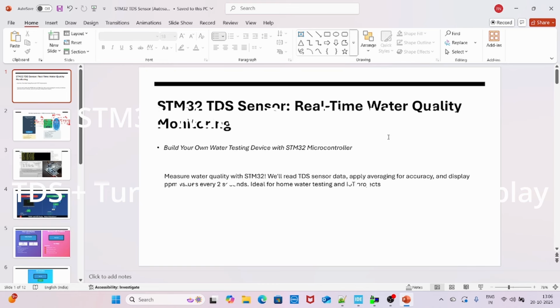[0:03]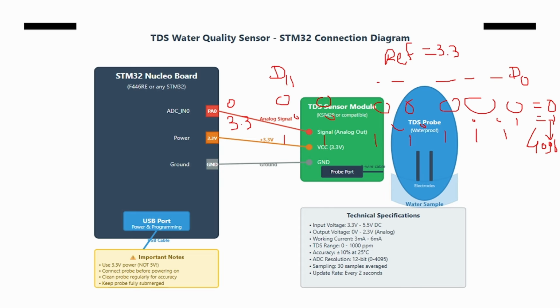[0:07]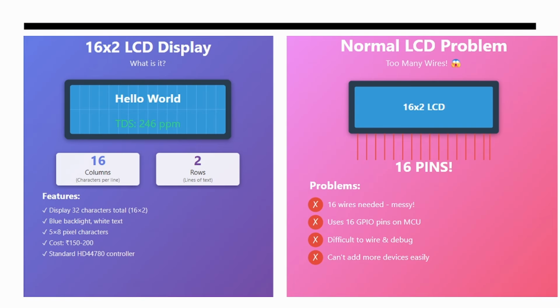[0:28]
In the last video we built a TDS water quality monitor and we also used an LCD, right? And now today we are adding a turbidity sensor to measure the suspended particles. In this video I'm going to show you how we can add another sensor on another ADC pin. Our setup will remain the same, but this time we will measure another parameter to measure the cleanness or the quality of the water, which is the cloudiness, right?
So this part we have already covered, and this is what the turbidity sensor looks like. On the left side you can see the sensor, and on the right side it's our setup. In the last video we added up to this TDS sensor, but in today's video I'm also going to explain how to interface this sensor with the circuit and how to measure the water's cloudiness, or you can say measure the suspended particles, dirt, in water. It's like how cloudy the water is, right?
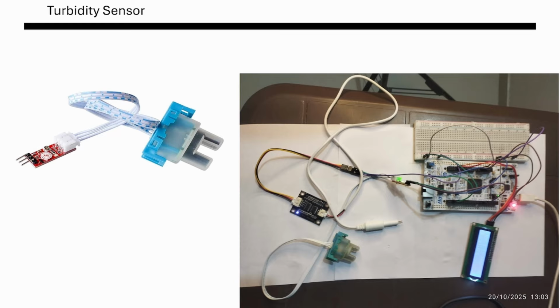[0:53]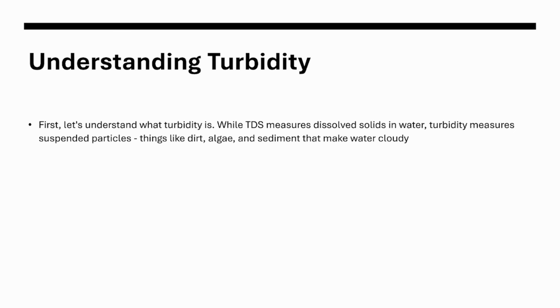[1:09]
For clean water, it shows high ADC, or in another way you can say low NTU. NTU is a measurement of the quality of the water, right? And for dirty water, it will be high. So the relationship is inverse. Before understanding this, let's first understand what turbidity means.
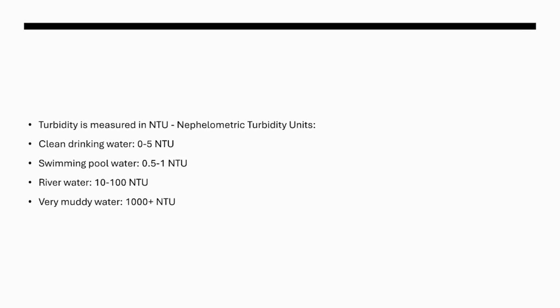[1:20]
While TDS measures dissolved solids in water, turbidity measures suspended particles like dirt, algae, and sediment that make water cloudy. Turbidity is measured in NTU, which stands for nephelometric turbidity unit. For clean water, the value should be between 0 to 5 or very, very small. For swimming pool water, it should be 0.5 to 1. For river water, it should be 10 to 100. And for very muddy water, it would be 1000 plus. Right? So these are the standard values.
However, today we are just trying to implement the thing. So these criteria may not be met, but we will try our best to achieve an experimental result, which we can demonstrate and which we can understand. This is our main goal.
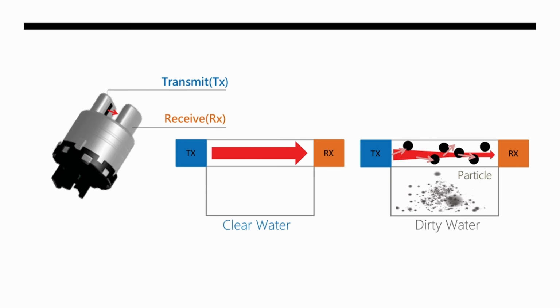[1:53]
The principle of the sensor is that it has two different parts, not inputs, but you can say probes. One is a transmitter and the other a receiver. The transmitter transmits the signal and the receiver receives the signal. Here on the left side you can see, if the water is clean, then whatever the transmitter transmits, the same signal is received by the receiver, with zero loss, or nearly zero loss. So in this case you will have a high output, right? The receiver will receive maximum of whatever the transmitter transmits.
But in case of dirt or particles, this scenario will change. As the water is dirtier, as the number of particles increases, the signal will be distorted and the receiver will receive very, very little signal. And hence the ADC or the output voltage will be very low. So it's an inverse type of relationship. For clean water, output voltage will be high. For dirty water, output voltage will be low.
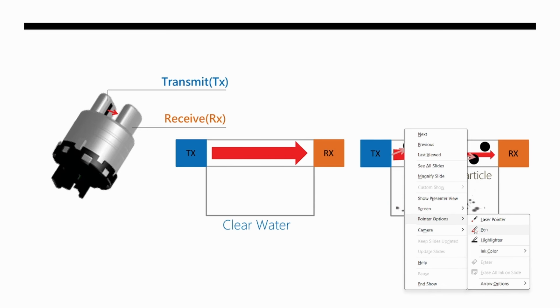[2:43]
Okay, so let us understand this as a graph. Let us assume this is ADC, and we have a 12-bit ADC. If you don't know, then please watch my previous video. As voltage increases, the ADC also increases, right? But from this concept, if ADC is high, the water is clean, and if ADC is low, the water is dirty. So you can say this is the cleanest water, and this is the dirtiest water. I can write it like that. This will be our overall picture, right? You can draw it like this. So ultimately you have to measure the ADC. If ADC is high, water will be more clean. If ADC is low, water will be bad, right? So this is the overall principle.
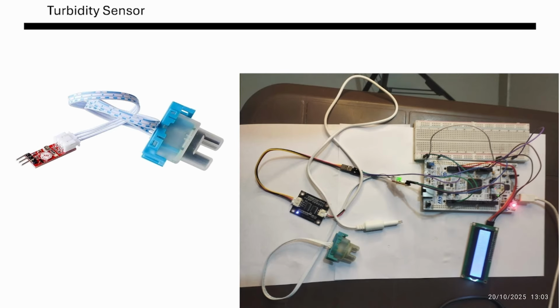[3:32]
And our sensor connection: the sensor is having 5 volts, so simply connect plus 5 and ground, and one output pin is connected with PA4. So here you can see in this diagram also, this wire is PA4, right? This one. So this is PA4, and the other things are ground and plus 5 volts.
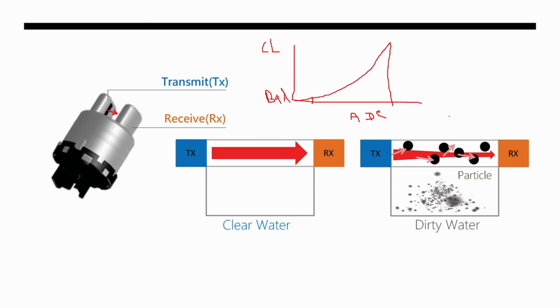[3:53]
Because we need two plus 5 volts, one for this LCD and one for the sensor, I've used a breadboard in this video, right? So this is the overall connections. And the main important thing is this conversion, right? So you have to remember this thing.
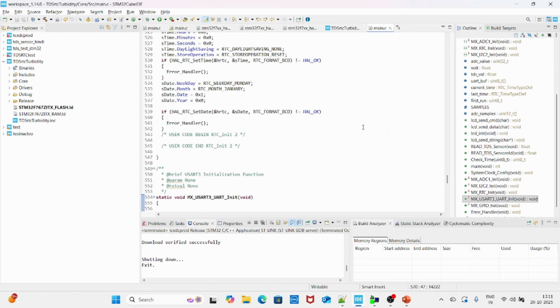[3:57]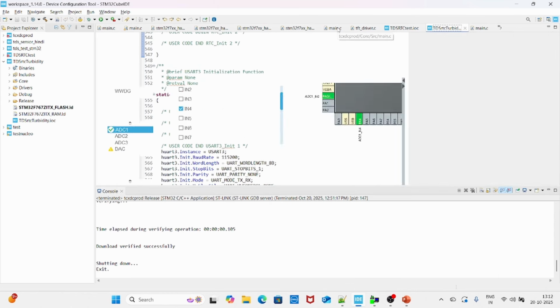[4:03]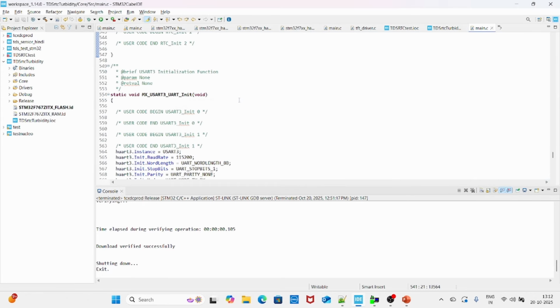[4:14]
Now let us open our code, right? So this is the same code which I explained to you in the last video. Now here I added only one thing. I just enabled one more pin of ADC 1, and this pin is around here, PA4, you can see, right? And then I just generated the code. So now in this code we have PA4 also available. So I have to simply program this PA4, and the other things will remain as they are.
So for that, again you can see we have all the functions which I already explained to you, right? ADC and how to read this TDS sensor, and other ADC parameters. Now I'm just adding one more function. It's a float read, and this time I'm going to read the turbidity sensor, right? So this function will read the turbidity value. It will convert the value into the required number, and then we will display that number on our LCD. So let us take one float parameter.
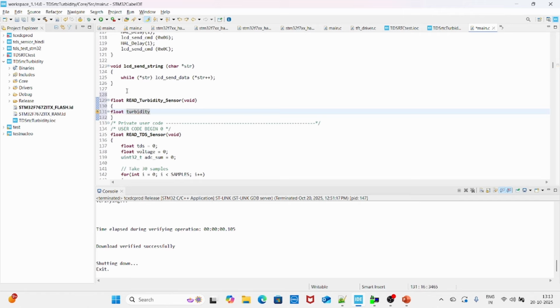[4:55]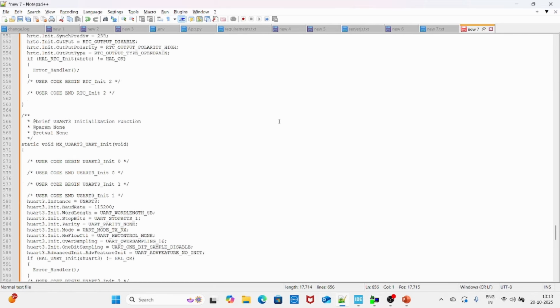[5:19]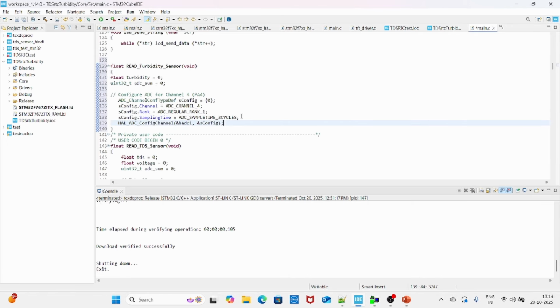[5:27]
Now let us configure the ADC, right? To configure the ADC, we have to write some configuration parameters, and because we are using channel number 4, I'm just using some configuration parameters which I have already pre-written over here. So I'm just taking them as they are. These are the configuration parameters, right? What we are telling the microcontroller is that I'm going to use channel number 4 at ADC. This is the sampling cycle and this is the configuration channel. So I'm telling that my ADC is ADC 1 and my channel is channel number 4. That's it. Now the rest of the thing is the same as we did in our TDS part.
So I'm just taking 30 samples. Sample is again a variable, so you can take any value. In our current example, it is 30, so it will take 30 samples continuously and then average them, and that is how we will get a stable value. Okay, and now let us start the ADC. This thing I already discussed. The function to start the ADC is HAL ADC Start, and here you have to write the handler of that ADC. So our ADC is hadc1. So this will start our ADC.
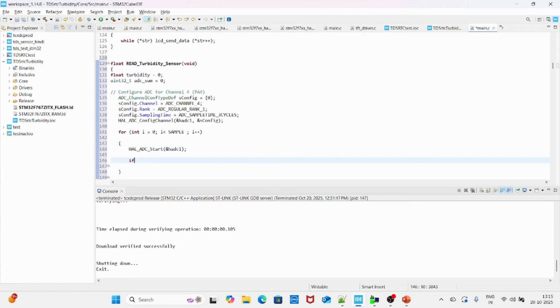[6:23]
Now we have to wait until it converts the final output. So for that we have poll for conversion, right? And here again we have two arguments. One is the handler and one is a timeout. And we have to wait until it becomes HAL OK. So HAL OK indicates now our conversion is done and now we can read the value. It will take very small time, but we have to wait for this. And now we have to store our value into some variable, and to get the value we have this function HAL ADC Get Value. Again here also we have to pass the handler.
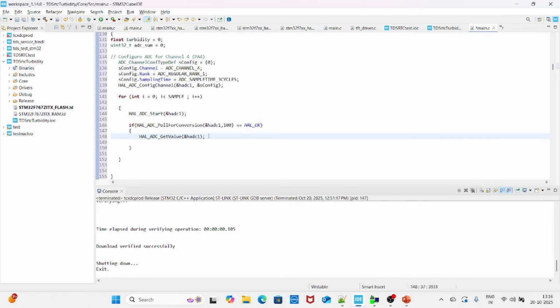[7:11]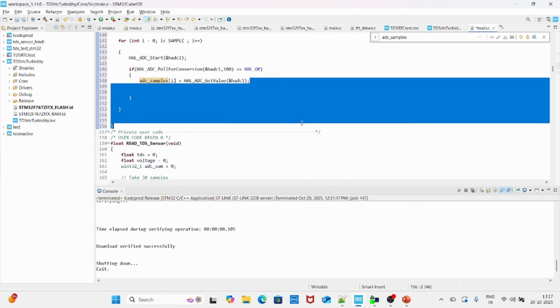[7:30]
But now we have to save this somewhere, right? So for that we have this variable ADC samples i, right? And this we have already declared over here, right? Number of samples. So this is the variable where we will store 30 different values, continuous 30 different values. And then let us find the sum. So it will continuously add these one by one, and finally you will have the total sum of all ADC values.
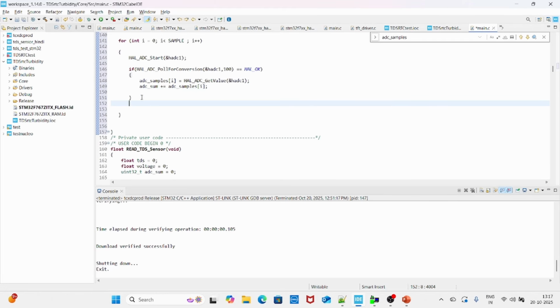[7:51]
Now once we have the total of 30, let us stop this. And to stop, again we have to write HAL ADC Stop, pass the handler, and wait for some time. Let us put 30. It's a small number, right?
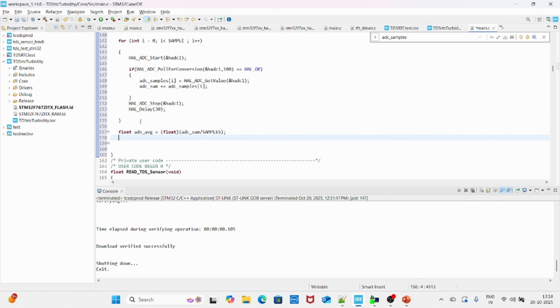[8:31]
So now we have the final sum of 30 values. Now we have to find the average. So ADC average will be float. Here I'm typecasting the final answer. We have this ADC sum divided by samples. Okay, so this is very simple. We are simply finding the average. So sum of all 30 divided by 30 will give us the average, right?
Now this is the main important part. This is the calibration part. As I told you earlier, for clean water, let us say ADC clean is some number, right? This could be any number. I'm just taking it 2800. This is the ADC reading for clean water. And as I told you earlier, for clean water, ADC will be high, right? But at the same time, our output NTU should be low, as low as possible. So ideally, let us take it as 0, right?
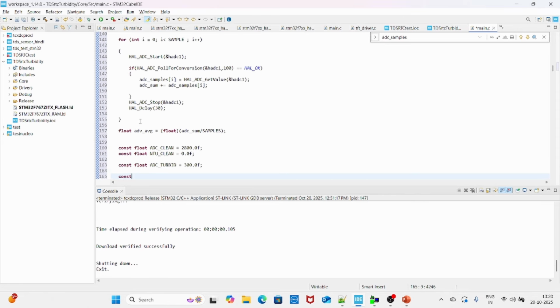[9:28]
And in the same way, let us add one more calibration point, but this time for the turbid water, right? 300. You can change this, you can calibrate this, right? But in this video, I'm just going to explain the concept. Later on, we will calibrate this and make a final product which can be used to measure the quality of water. But this time I will just explain the concept. Okay, so for turbid water the NTU would be high, so let us take this as 1000, right? So here I have two different calibration points.
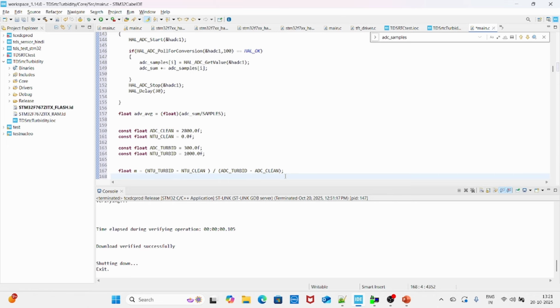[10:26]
Okay, and now we will write the equation for the slope, like NTU is equal to mx plus b. X will be your ADC value, right? And we'll calculate the slope. Float m is equal to, now let us use this formula: turbid water NTU minus clean water NTU, divided by turbid ADC minus, sorry, clean ADC. Okay, so we are calculating the slope.
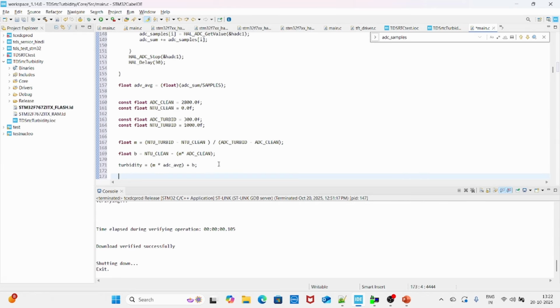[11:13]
Now we will calculate the intercept. B will be, sorry, we put b as NTU clean minus slope into ADC clean. So this is our intercept. And now we will apply this in the equation. So NTU will be m into ADC plus b, right? So our final turbidity would be slope into ADC average plus b. I will explain this calculation in more detail in another video, because this video will become more and more longer. So that's why I just stick with the concept. We are not going much into mathematical calculations, but this is what the turbidity calculation is.
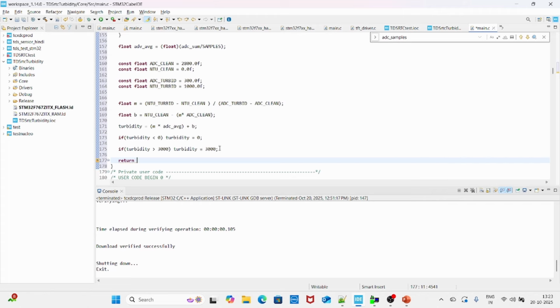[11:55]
And now let us limit this, because we have to make sure the value will not cross a certain limit. So if turbidity is less than 0, we will keep turbidity equal to 0. And in the same way, if turbidity is greater than 3000, let us keep it 3000, not more than this. Because if your calibration goes wrong, you will get an infinite value, right? Which is not perfect. So just keep this in mind. Whatever calibration value you define, ultimately you have to limit this, okay? Because in an ideal instrument, it should be within the range. It is not like an infinite thing, right?
So now this is the calibration. It uses y is equal to mx plus b. We measure ADC at two known NTU values. Okay, because we know these two known values, we calculate the slope and intercept and then apply the formula. Okay, main part. Now again, we have to call this function in our main program.
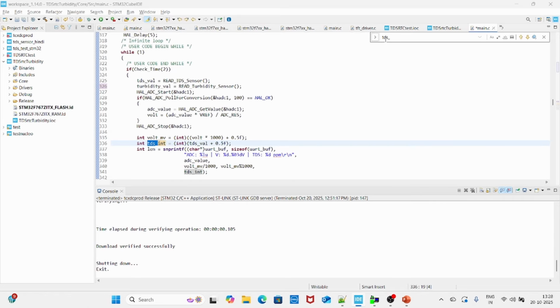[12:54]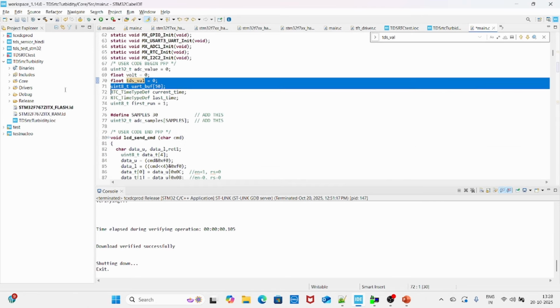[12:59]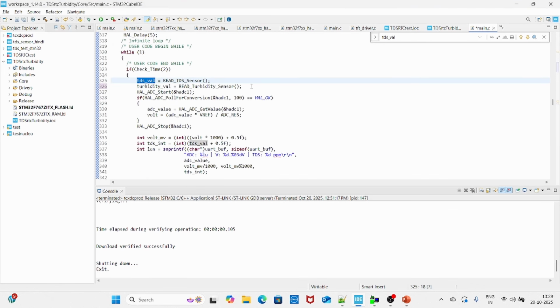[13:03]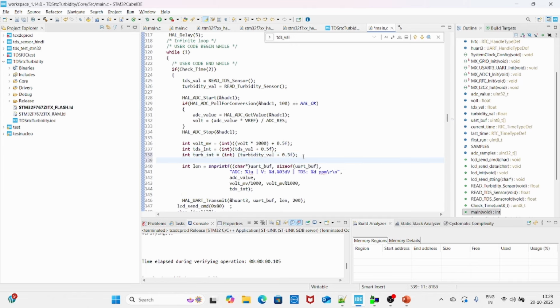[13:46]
So I'm just taking another integer. We typecast this final calculation into integer. Let us write this turbidity value plus F. Okay, so this is also added.
Now change UART output to include this turbidity. So here we have this UART buffer, right? And here I'm just removing this totally and keeping this TDS as it is. Percentage D ppm, turbidity, percentage D NTU. This is the unit. And I'm just passing only two things: one is TDS and one is turbidity, right?
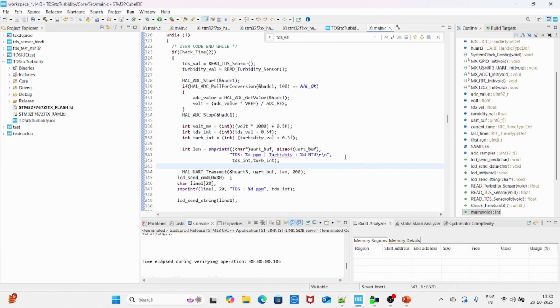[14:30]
So this is the UART part. Now update the LCD as well. In the LCD we have the first line where we have displayed this TDS. We will keep this TDS on the first line only. Now we will display the turbidity at the end of the second line. For that we have C9. As I told you earlier, C0 means second line, C9 means second line, ninth column. So this turbidity part will start from column number 9.
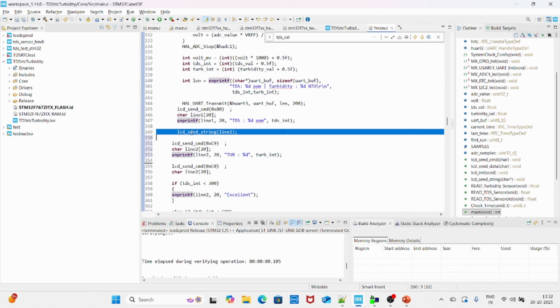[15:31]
Let us take character and just use this function as it is. Line 2, this time we are using line 2, and instead of TDS, it should be TUR, right? Remove this ppm. We are not going to write anything because we have limited space, and this variable should be int, right? And we will simply add this on the LCD. So we will simply write LCD send string line 2. So on first line we have TDS, then on second line, column number 9 will be turbidity is equal to the value, right?
And now let us add water assessment. So on C0, on the second line in first column, now simply put condition. If our TDS int is greater than 900, and if our turbidity value is greater than or equal to 300, we have to simply write bad. Let us use this formula as it is. We are not going to copy anything on any value. So water is bad.
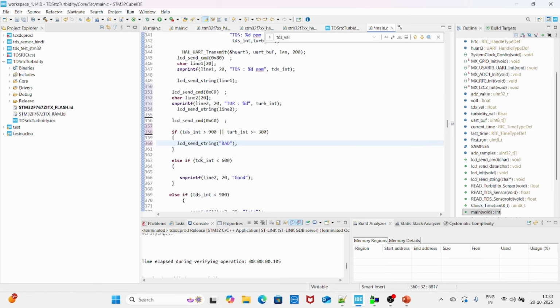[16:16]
Now else if TDS value is greater or equal 600, and if the turbidity value is around 150, sorry, yes, we have to change this part, right? Around 150, let us write fair. Copy this again. If this value is greater than 300, and if this is greater than 50, we can say let us write good. Else, if the TDS value is less than 300 and turbidity value is less than 50, let us write excellent, right?
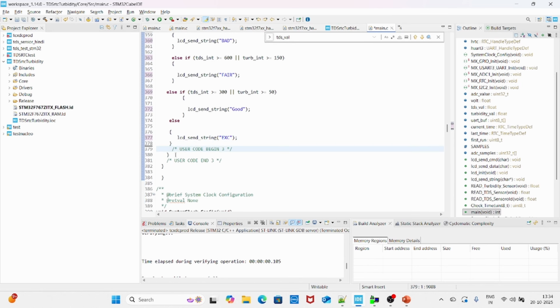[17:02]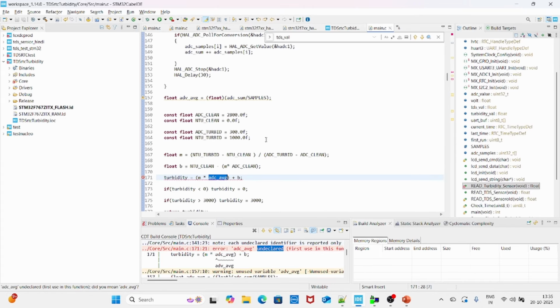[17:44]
And now this is the end of the code. Now I'm just releasing this target. Let us check for possible error. Now here some error is there in this ADC average. Okay, this should be ADC average, right? This is just a typing mistake. Now let us check for another error. Samples, I think it should be samples, right? So these are just typing mistakes because I'm holding this device from one hand. Now let us upload the code.
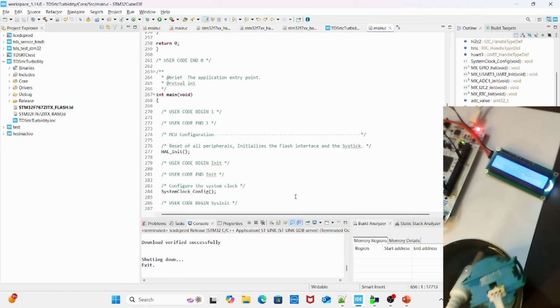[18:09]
Meanwhile, let me show you the circuit. Now you can see these are the connections. So I have just used clean water. Now let us upload the code. So this sensor is placed over here. This is the TDS sensor. This is the turbidity sensor. Now code is uploading. And now you can see the output. On LCD, you can see TDS and this turbidity. It is showing good water, right?
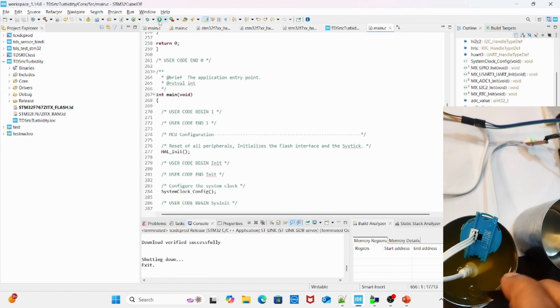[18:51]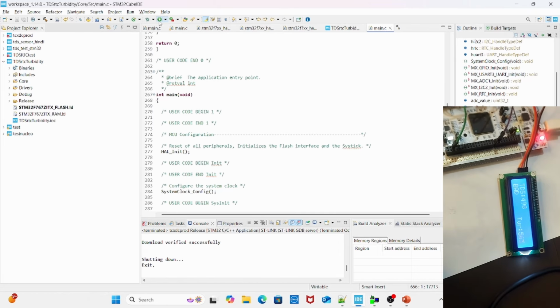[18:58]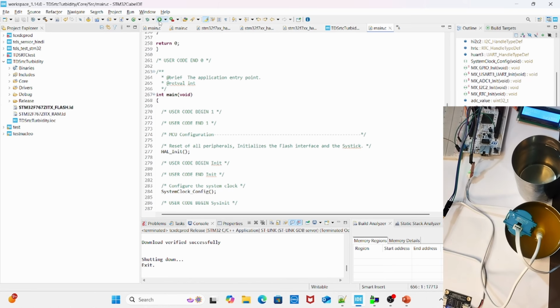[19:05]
Now let me add this dirty water over here. Let me simply change the TDS sensor from here to here. Let us observe this. It is showing fair, right? Now this is dirty water. So let me just slowly use this spoon to make it more and more dirty. And now you can see this value is increased. So this is how you can add another sensor. This demo is actually measuring the TDS value as well as how cloudy the water is.
So this is what for today's video. In the next part, I will add another sensor, and then we will make a complete project. We will use SD card and create a data logger where we will simply record the sensors value continuously. So this is what for today's video.